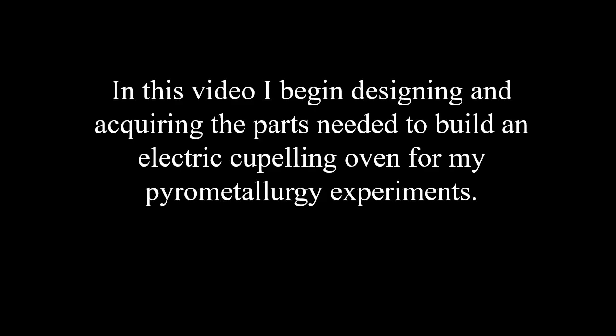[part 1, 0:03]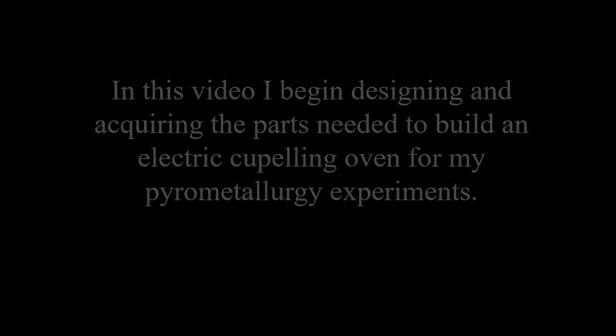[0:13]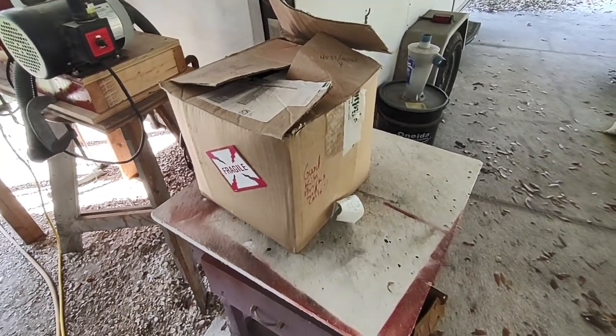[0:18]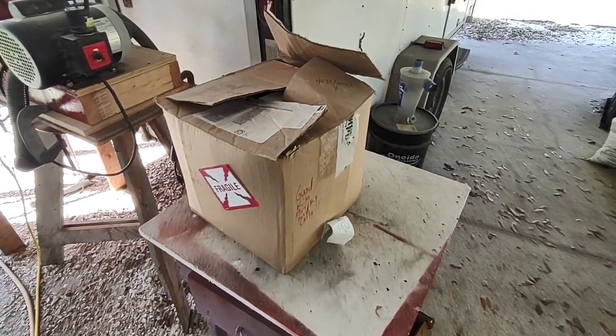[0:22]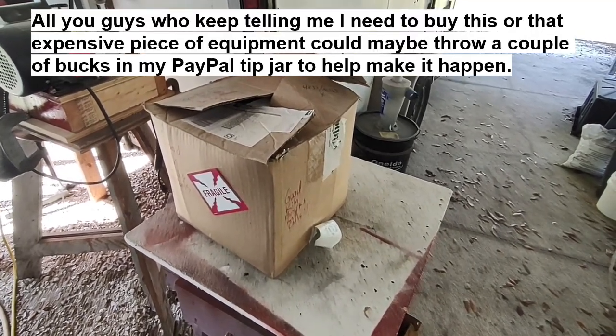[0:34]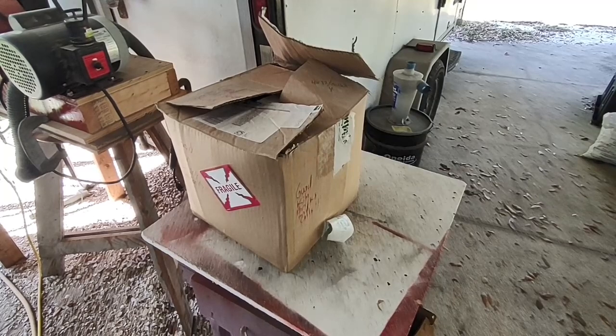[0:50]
Now, I've been doing some pyrometallurgy experiments and trying to do some cupelling over in my foundry furnace, and well, it's not ideal for that. It gets way too hot and there's not enough oxygen in there for cupelling. Everybody keeps telling me I need an electric furnace for this. Okay. Everybody keeps telling me that, but I don't think they're looking at the price tag on those things, especially these days post, you know, inflation explosion. They're pretty darn pricey.
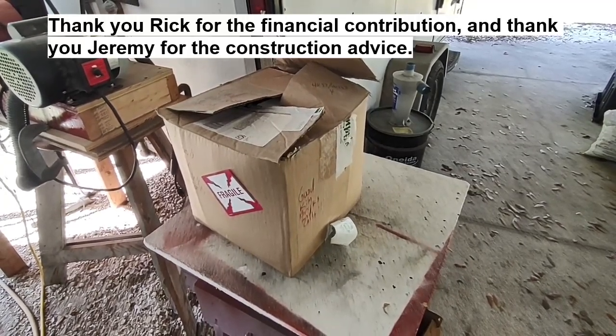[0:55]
So, well, I'm saving my nickels and dimes, and one or two of you have contributed toward the possibility of me getting one. Rick, I'm looking at you. Thank you very much, buddy. But I'm also looking at the possibility of building one. So, yeah, that's a possibility, too.
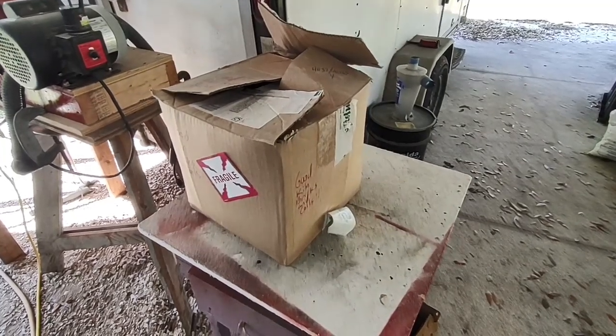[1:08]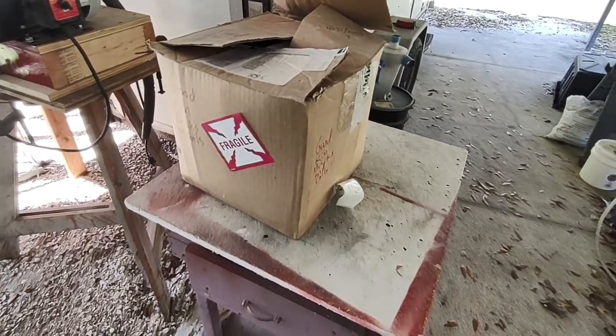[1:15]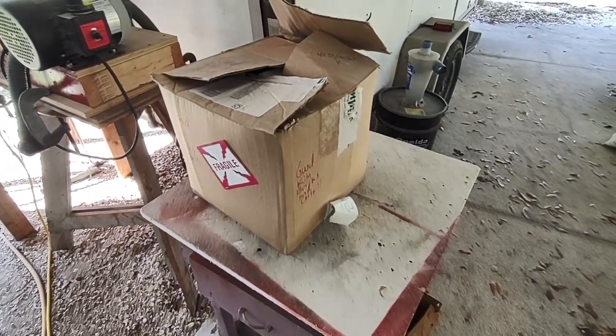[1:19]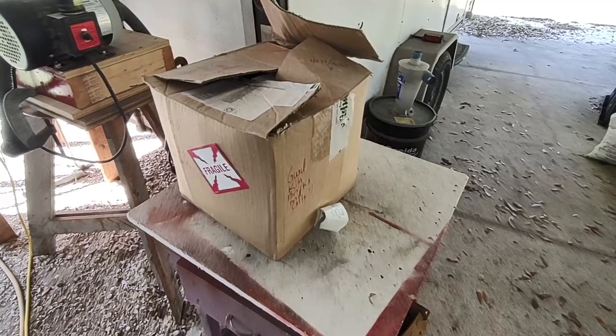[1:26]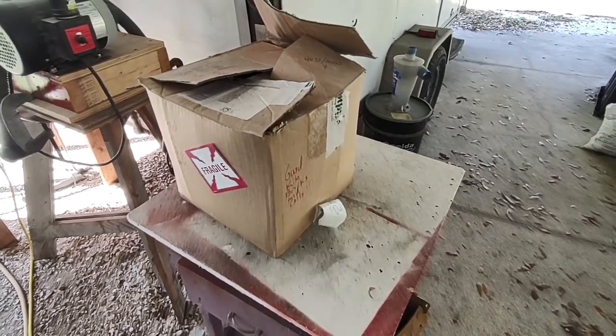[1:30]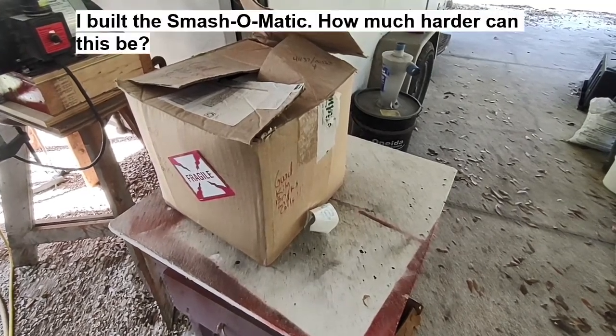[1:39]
So I'm looking at all the junk I've collected. You know, I've got kilns out back I use for various things, and I've got a lot of kiln bricks, good kiln bricks here in this box. And I'm wondering if I could build my own furnace using kiln parts and some other stuff I've got laying around. So I think that's what I'm going to try and do. It doesn't look that difficult, really. I've looked at a couple of home-built furnaces online, and I think I can do it.
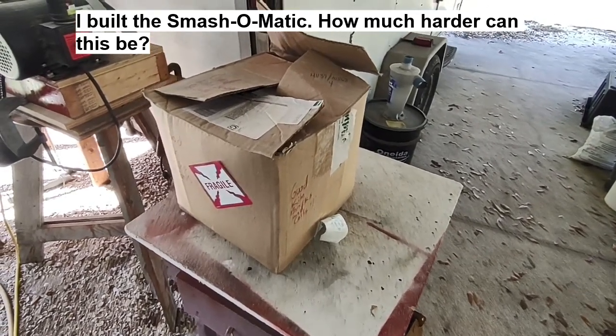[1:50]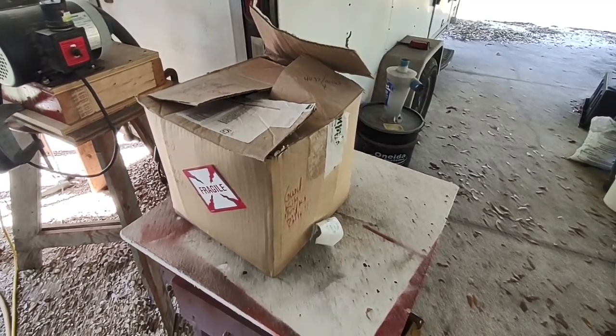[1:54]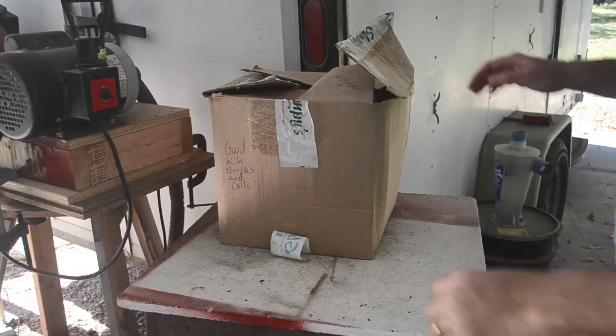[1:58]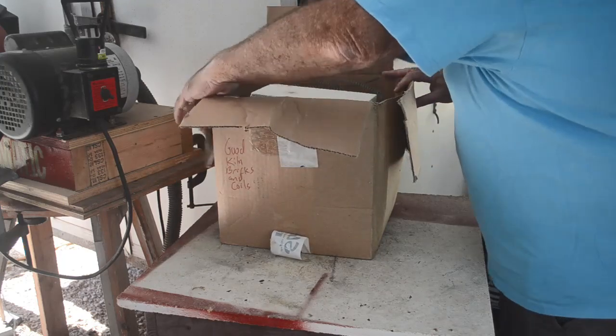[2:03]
So let me start unpacking this box, and we'll see if I've got some of the parts I need. I'm sure I'm going to have to order a bunch, but I'm betting the price tag is going to come in way below buying a newer used furnace. So let me get to unpacking. So let's just see what we've got in this box here. It's been in storage for a while. Haven't had to do any kiln repairs for a while.
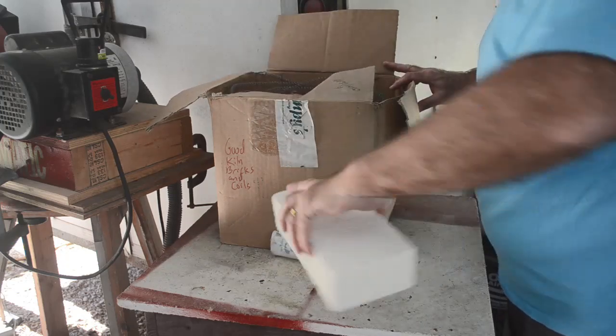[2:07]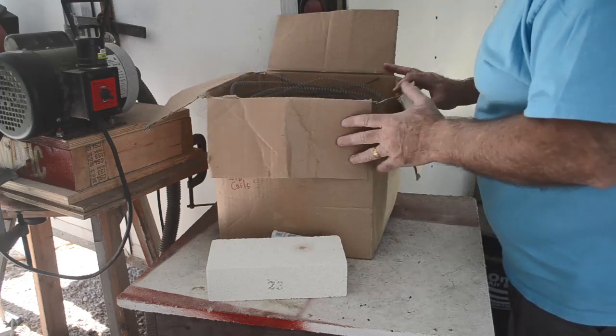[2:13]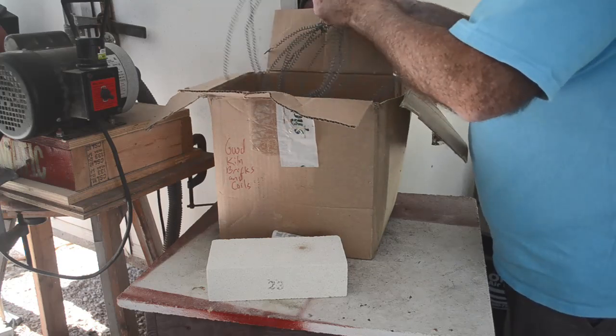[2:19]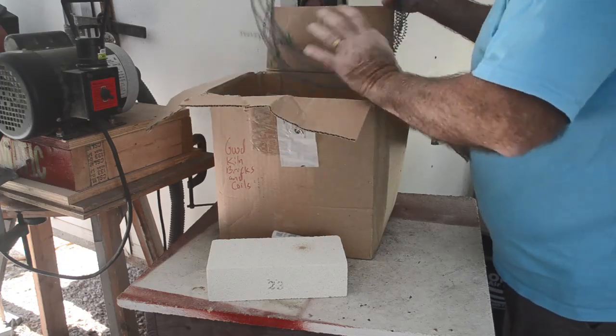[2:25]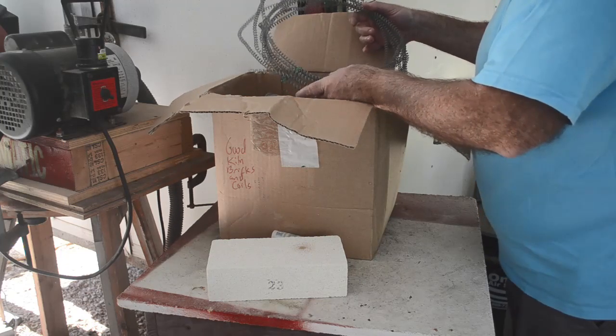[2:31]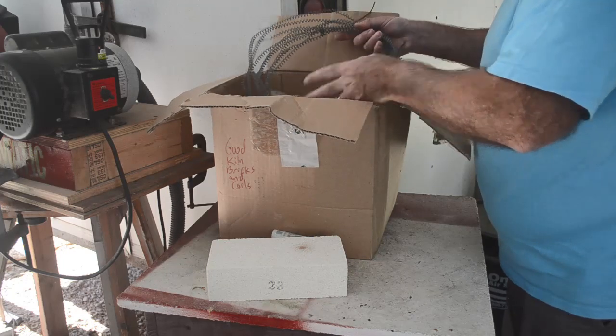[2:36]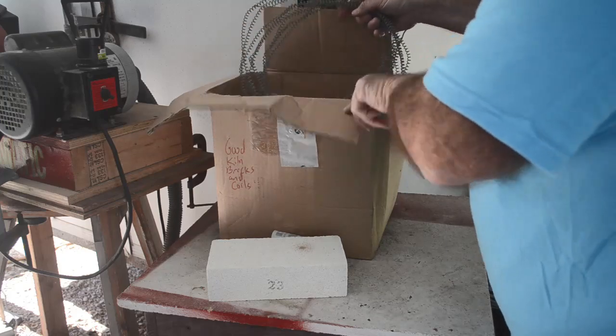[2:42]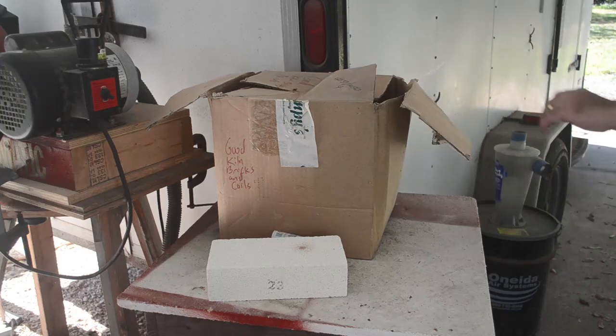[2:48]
Here's a K23 kiln brick, and I know I have another box with some of these in it. I must have put this one in here just because it didn't fit in the other box. Here is a couple of spare coils for my kilns. Now these I think are going to be too big, much too long. And these are for 220 volts as well. I want to build a furnace that's going to run off 120 volts, so I will probably need to wind my own coils, I think, rather than try and reuse these. Set them aside over there.
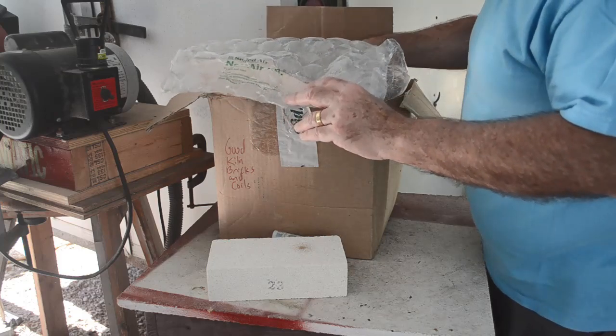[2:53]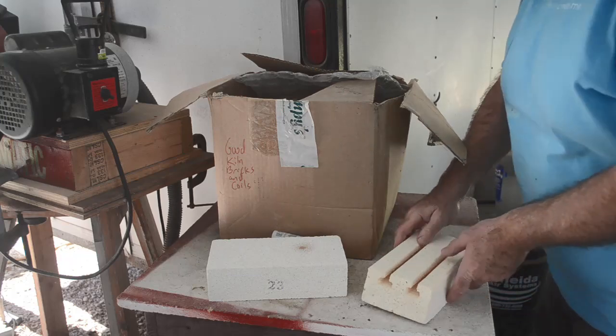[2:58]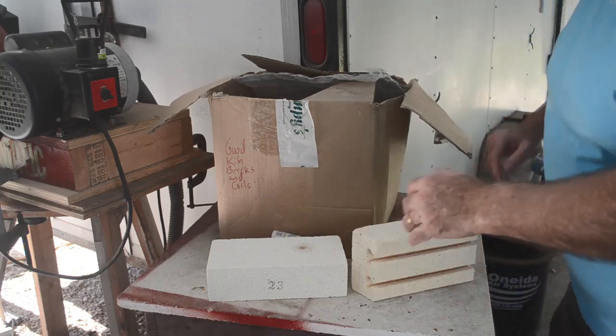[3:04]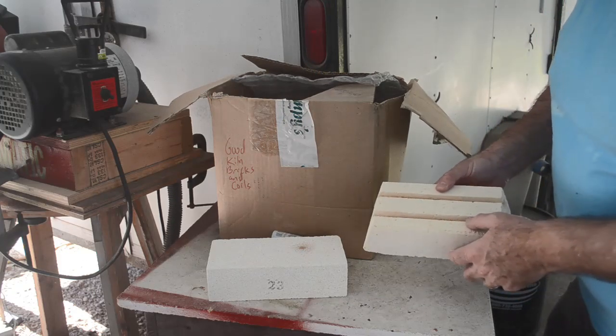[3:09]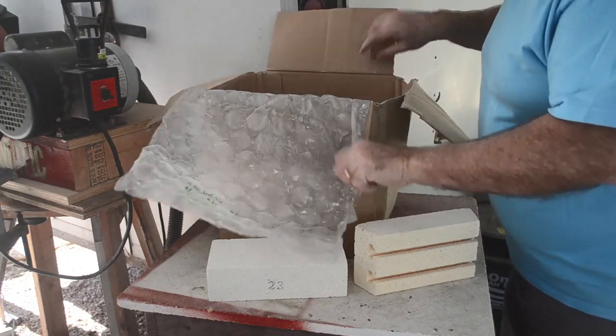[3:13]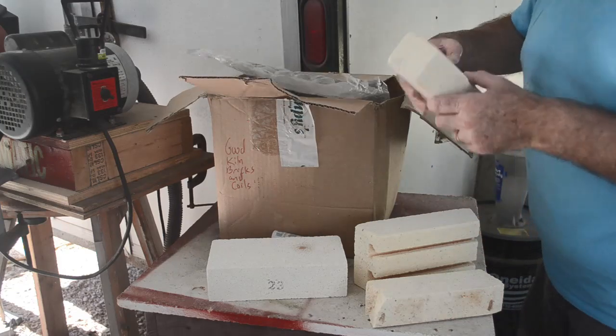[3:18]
Yeah, these are the kind of bricks I was thinking I had. These are for like octagonal or 10 or 12 sided kilns. They got sort of a bevel on the ends, but they've got channels for coils in them. So yeah, I got quite a few of those in there. I've got some of these. They're kind of broken, but I think I can cut them and glue them together or mortar them together.
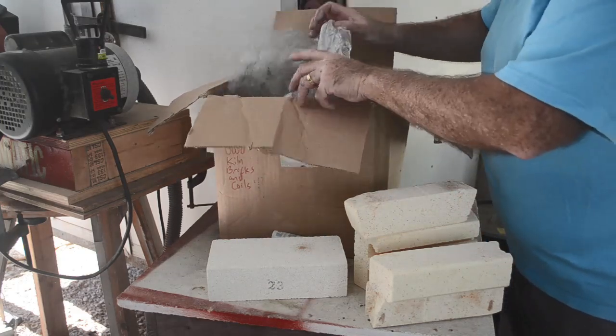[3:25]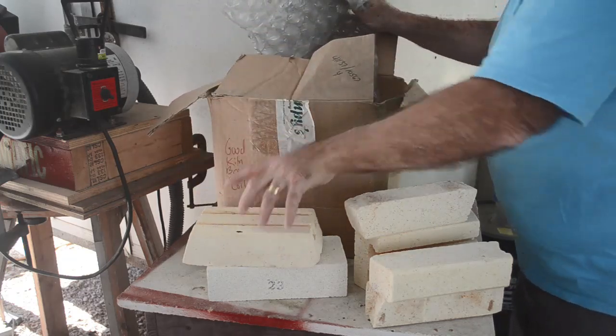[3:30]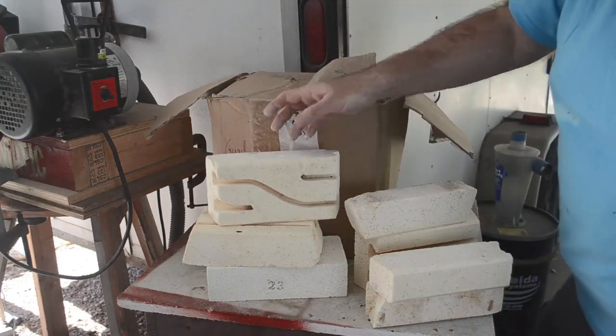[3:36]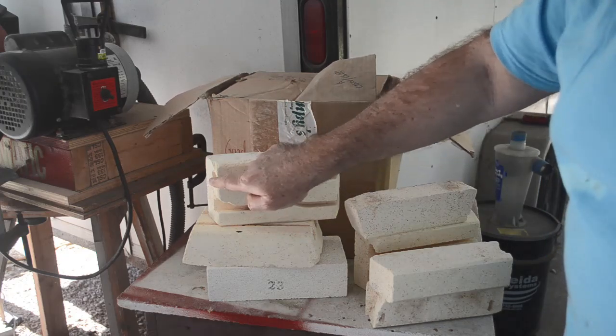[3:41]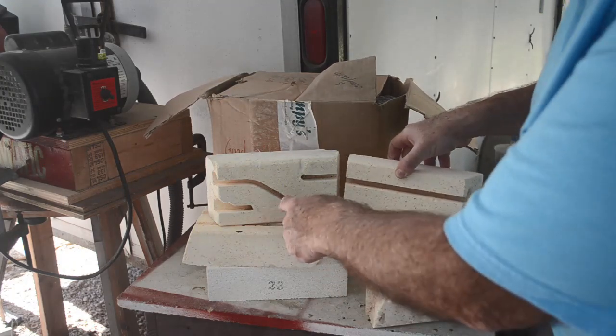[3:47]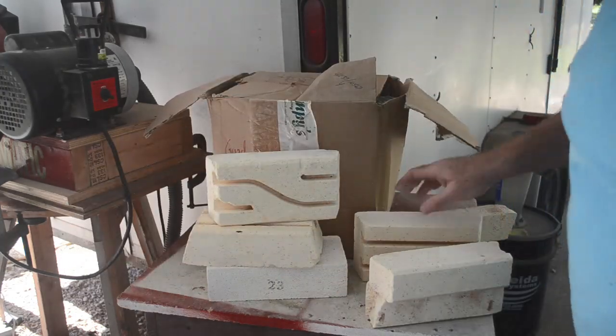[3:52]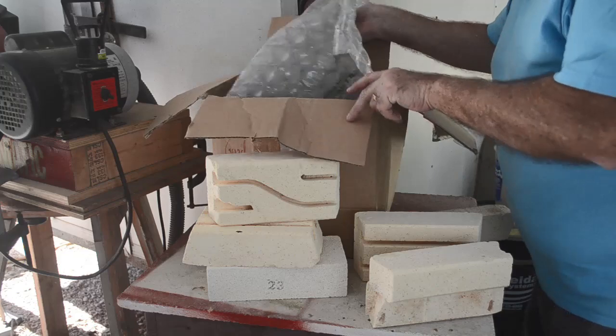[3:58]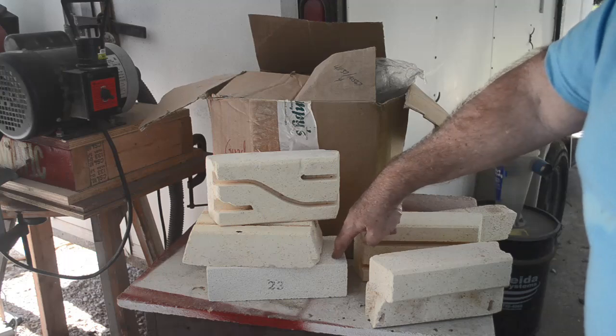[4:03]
Oh yeah, here's another one of these. Oh, here. There's a crossover brick where the ends of the coils go through here and then they would come and cross over. So you'd have something like that. Coil would come around, back up, and you'd have something like that on this side. Yeah, I think I can make something out of this stuff. I think I've got enough kiln bricks. Yeah, there's quite a few more down in here. And I know I've got some more of these.
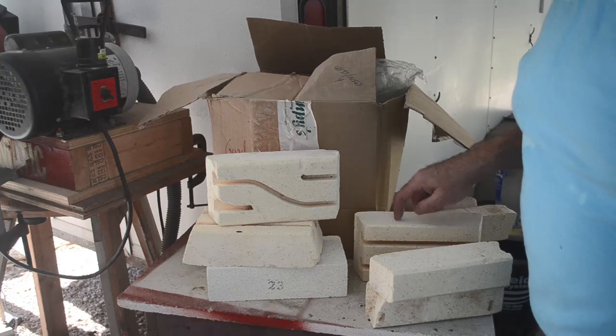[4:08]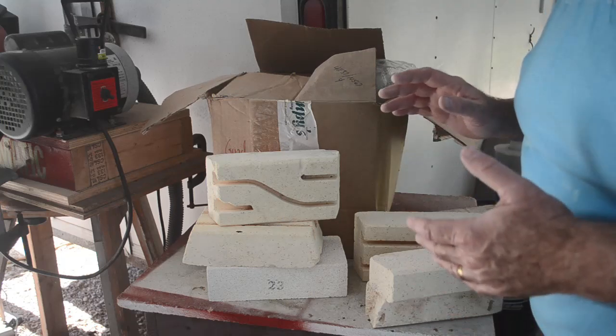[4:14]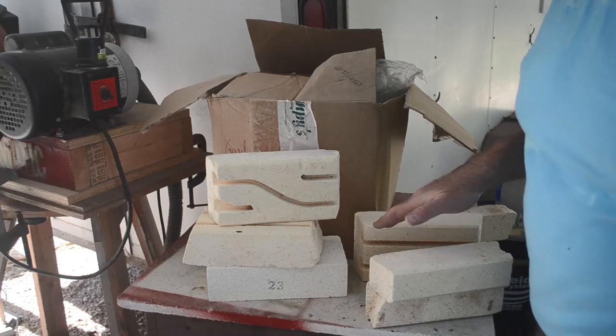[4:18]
So yeah, the only thing I'm a little worried about is these things are all very, very soft and fragile, and they kind of dissolve if anything molten falls on them. So I may need to buy some tougher bricks for the base of the thing. But I think for the sides and the top, I've got bricks that'll work. I think so. So I'm going to have to get bricks for the bottom.
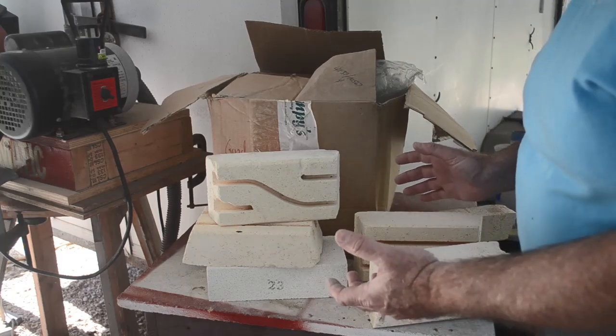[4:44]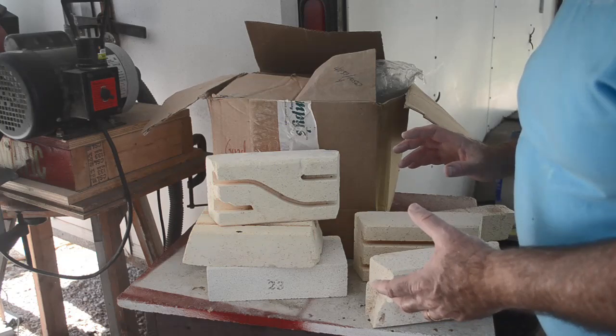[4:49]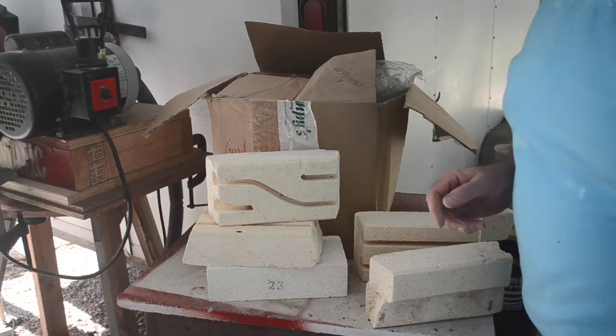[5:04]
I'm going to have to get some wire, some resistance wire I can wind into coils. I'm going to have to build a coiling jig. And I'm going to have to buy some stuff to hold it all together, like maybe some angle. Some slotted angle would be better. I'm going to need a temperature controller, a thermocouple, and probably a solid state relay for turning the coils on and off.
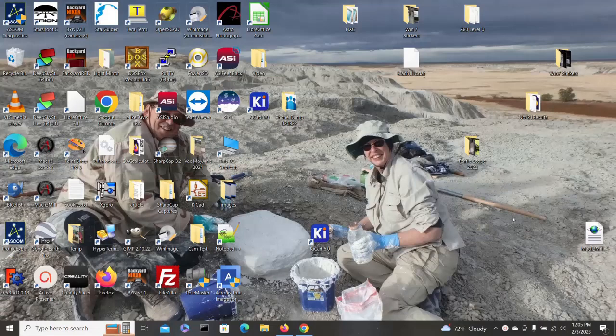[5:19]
So yeah, I guess I need to go shopping, but I think I've got most of the structure here in all my kiln bricks. So, and my K23 bricks. So I think I'm good. Okay, let me go shopping for the other stuff I need. Well, I guess it's time to go shopping.
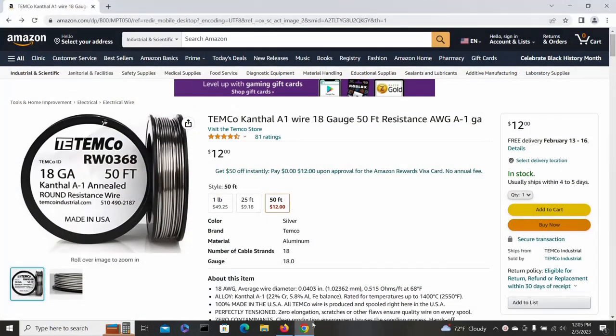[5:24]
So I'm on Amazon here. Here's the resistance wire that Jeremy recommended. So I'll get 50 feet of that. Okay. And let's see, what else do I need?
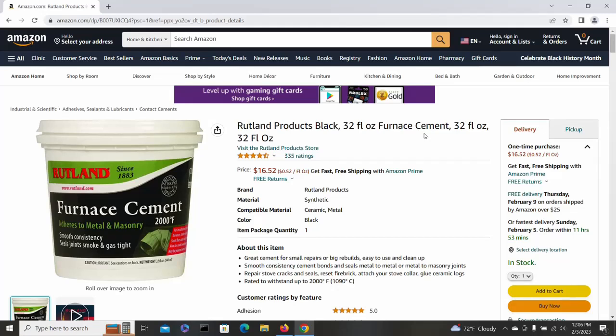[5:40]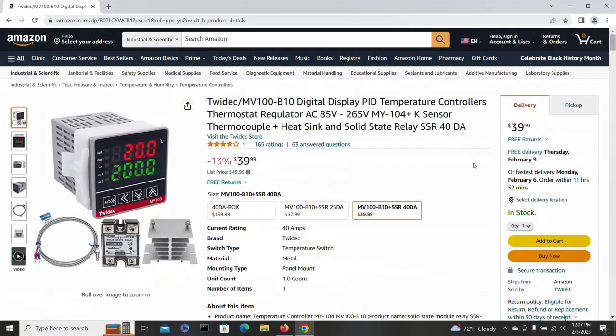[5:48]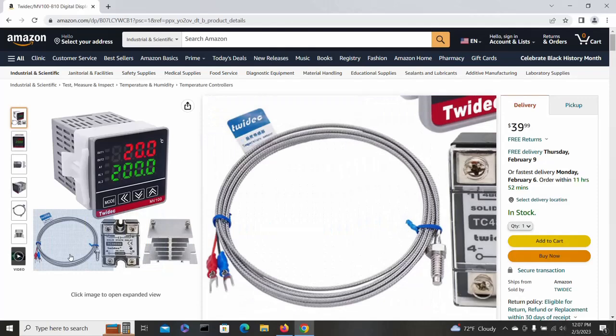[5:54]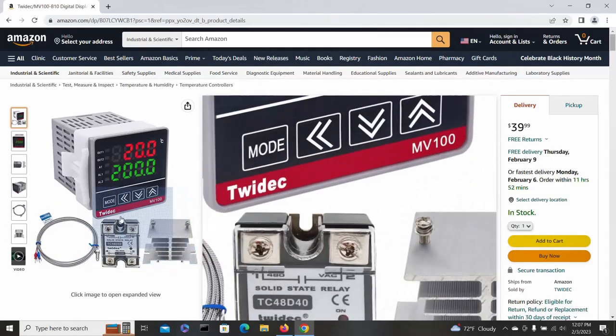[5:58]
Okay, here's some furnace cement. I've used this brand before and it works pretty well. So I will get a tub of this stuff. So here's the temperature controller that Jeremy recommended. It comes with a thermocouple and a solid state relay and a heat sink for the solid state relay. So I will get this.
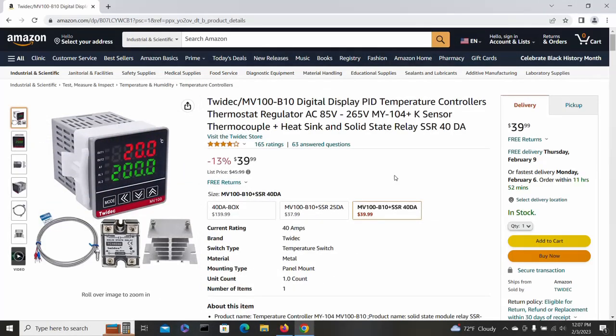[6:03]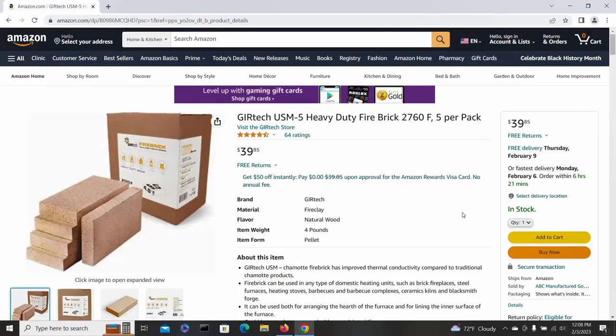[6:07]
What else do I need? Okay, I don't have quite enough fire brick to build this thing, so I'm going to get some of these. These should be good for the base. Most of the fire brick I'm going to use to build this is pretty soft, and I know the base is going to take the brunt of the abuse, so these are going to be much harder, firmer bricks, so I'll use these for the base of the furnace.
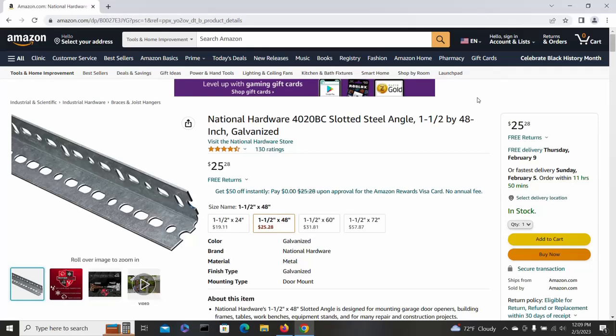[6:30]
And here's some slotted angle. I can use this for the legs of the furnace. I can use it up the corners, around the corners of it, underneath it for support. So yeah, this stuff's pretty handy for building a skeletal framework around the furnace to hold it all together and take the abuse that I don't want the soft bricks to have to take when it gets moved around and put into storage and stuff. So I will get 3 or 4 of these, and I have to think about anything else I might need. I'll probably have to go shopping again in the future, but this is a good start right here.
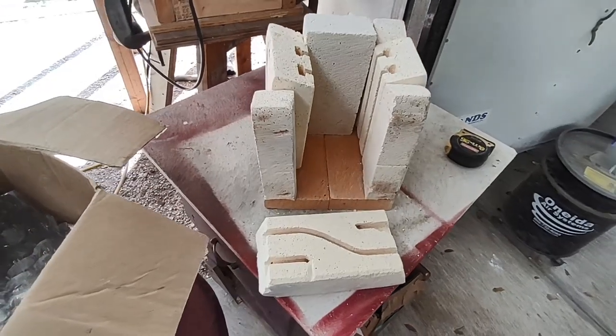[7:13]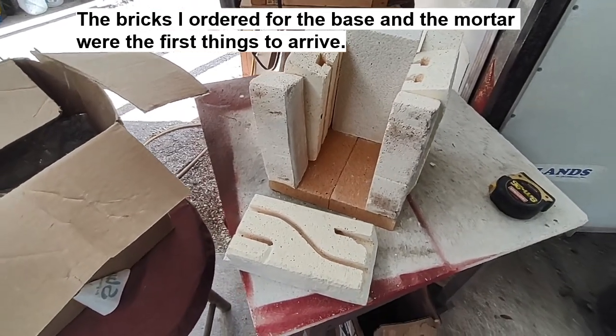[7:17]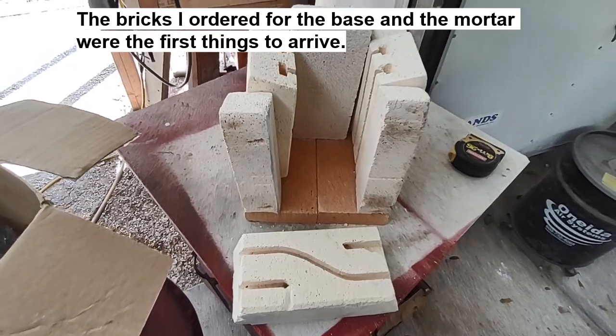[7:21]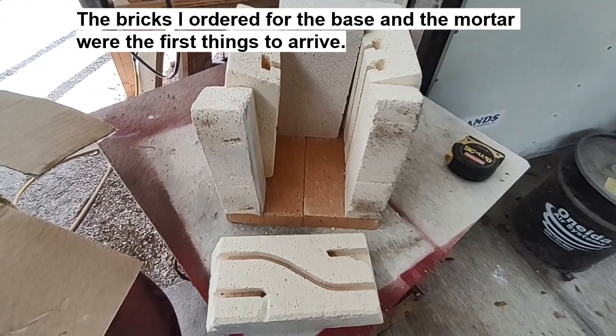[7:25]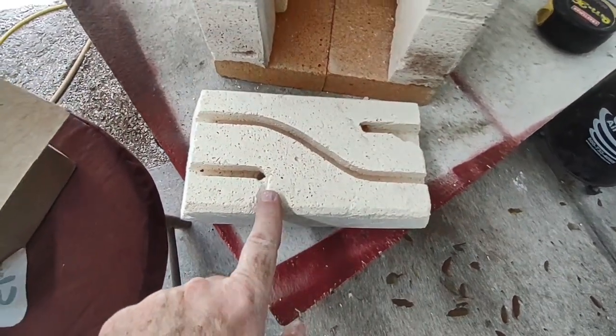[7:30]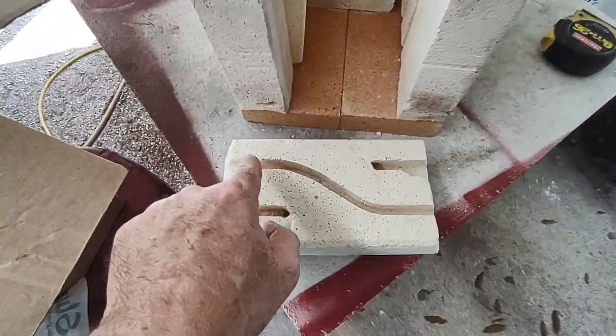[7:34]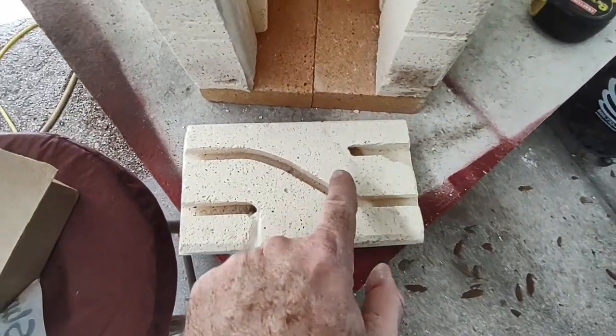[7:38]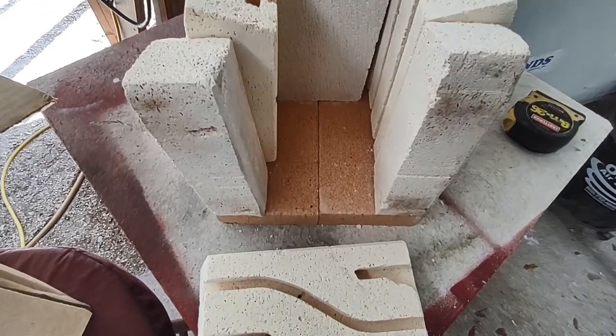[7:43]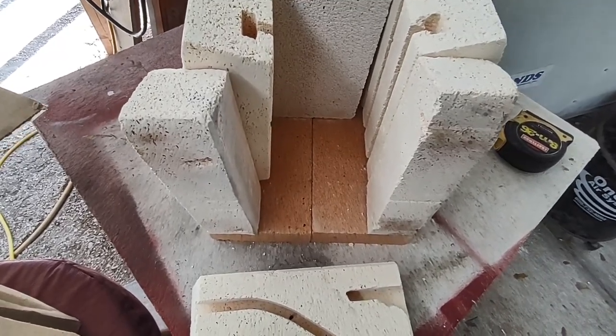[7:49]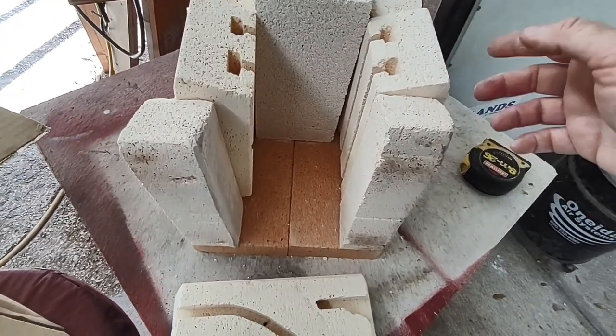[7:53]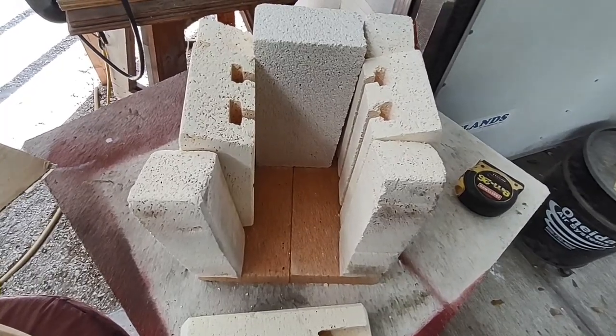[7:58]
What we have here is sort of a mock-up or early engineering study of a potential cupelling oven I'm going to build. I've started putting some ideas together. This one would be on top, and the coil would come in, go down one side, back up, across, down the other side, back up, and then out. And it's not going to have a very large capacity, of course, but it doesn't really need to. And of course, I've got these things stacked vertical. It might be better to do them horizontal, so that's a possibility too.
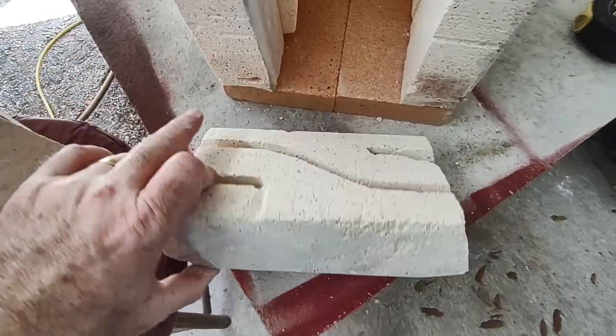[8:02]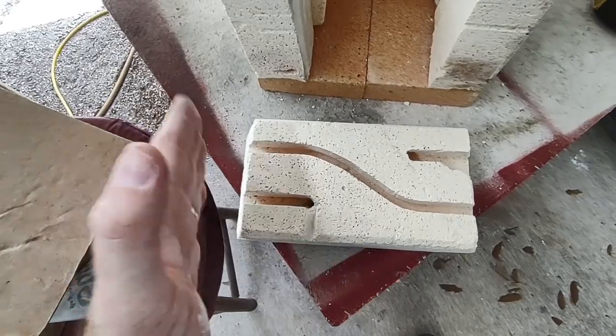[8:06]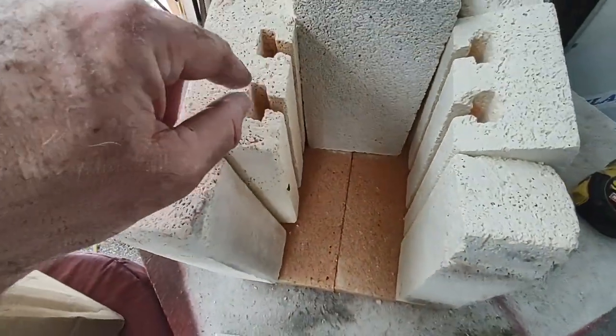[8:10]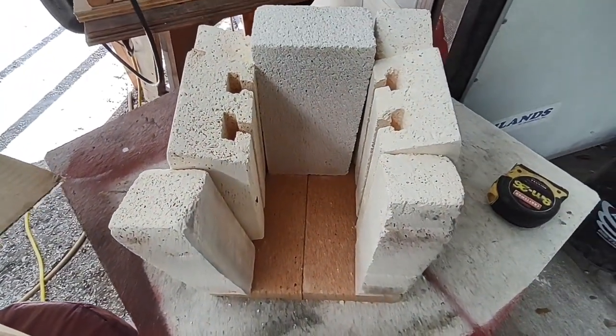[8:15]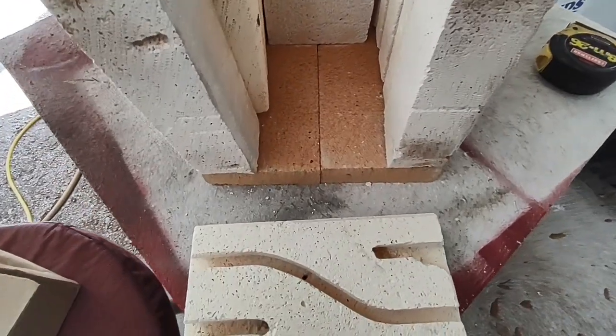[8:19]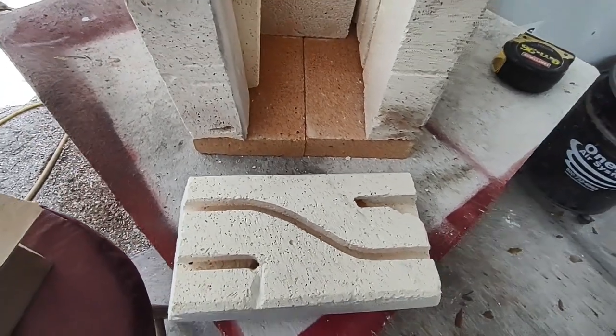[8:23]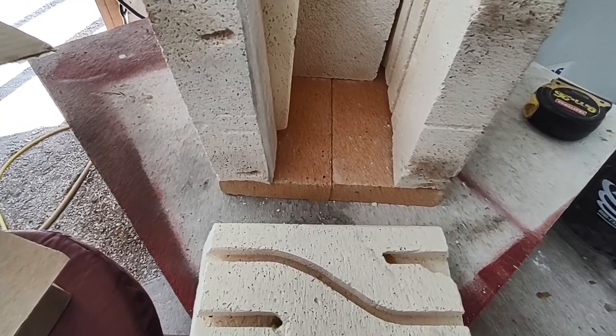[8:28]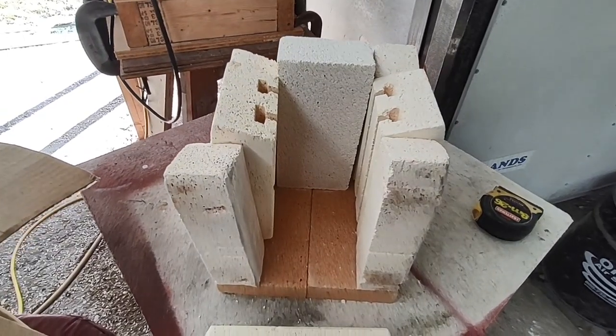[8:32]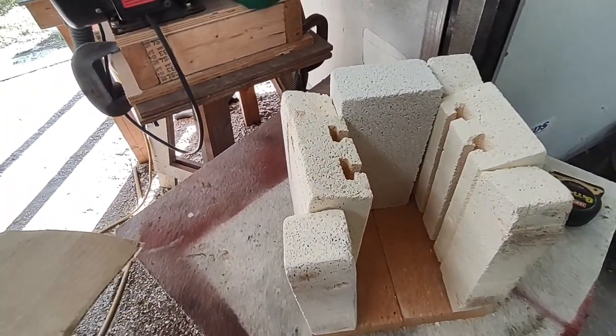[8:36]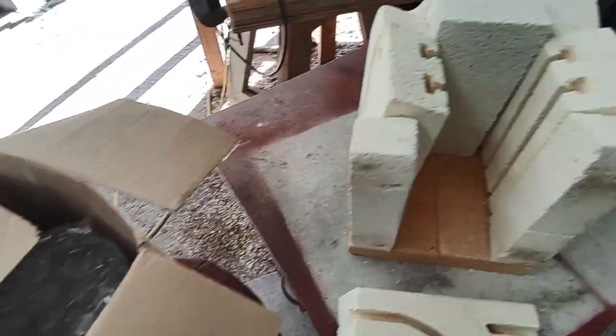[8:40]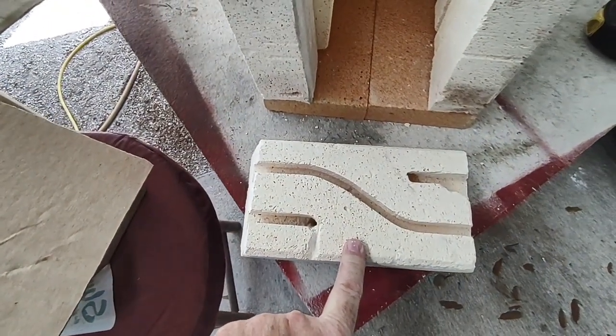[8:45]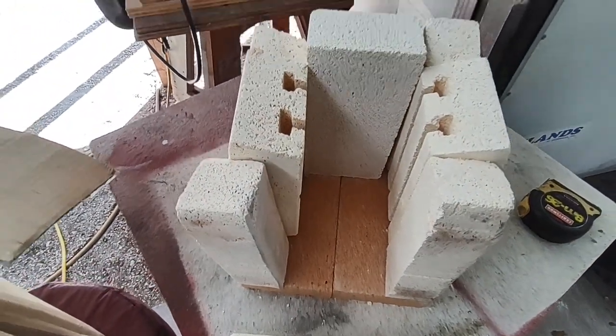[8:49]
And these bricks, they're beveled for use in like a 10 or 12 sided kiln. I'm going to have to cut them off square and knock out some of the webbing here so that the coil can cross over. But that's not really a problem. I've got some cement for cementing it all together. I might double up the layers on the bottom. I've got some thin fire bricks on the bottom. I might double up the layer there just for better insulation. I probably got enough bricks, besides this one on top. I'll need some others, skinny ones like these.
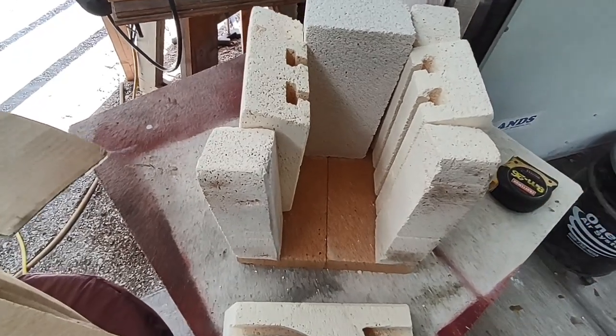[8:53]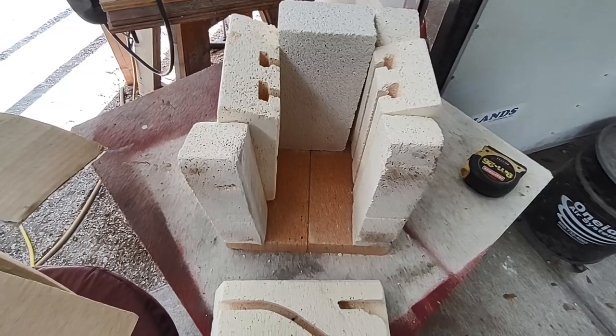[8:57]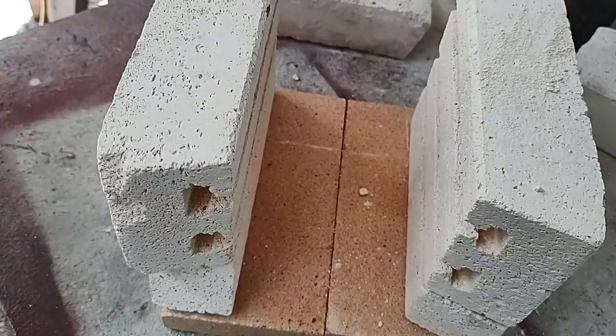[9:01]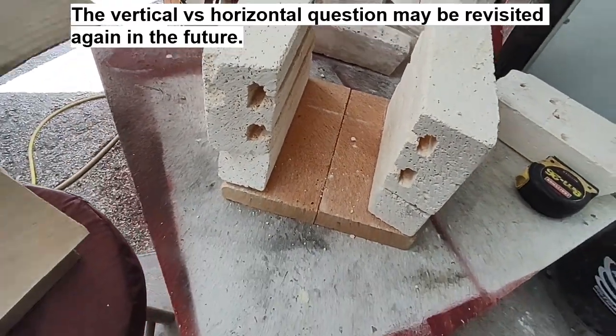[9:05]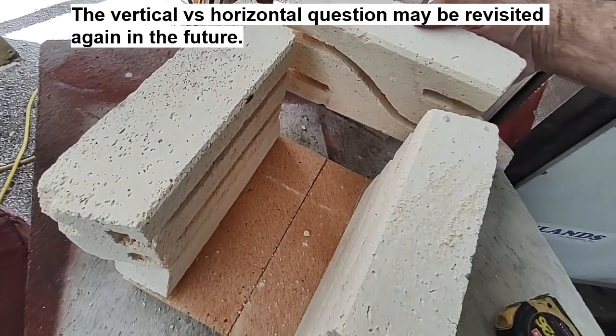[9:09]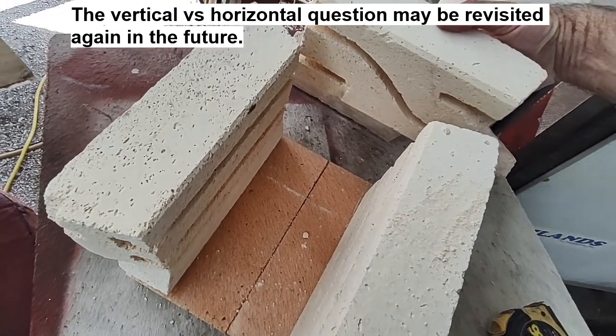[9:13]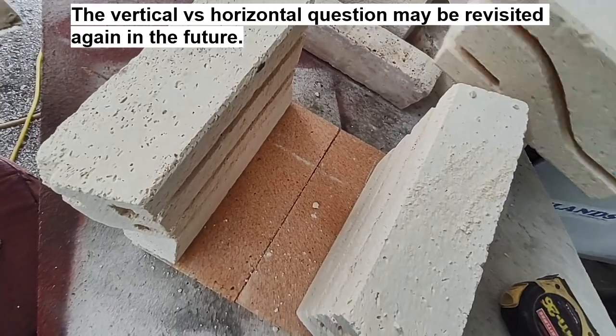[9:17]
So, let me rearrange this and see how it looks with the coils horizontal. That might actually work better. That would get the heat closer to the sample, which would be sitting here. So let me try that. Yeah, I'm not sure about going horizontal. I'm going to have to cut a lot off of this one brick here. And things don't fit together quite as well. So I'm thinking vertical is probably better.
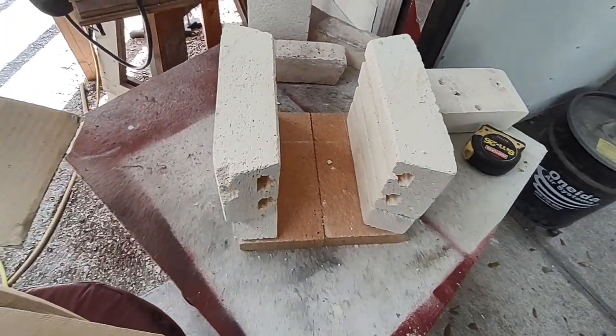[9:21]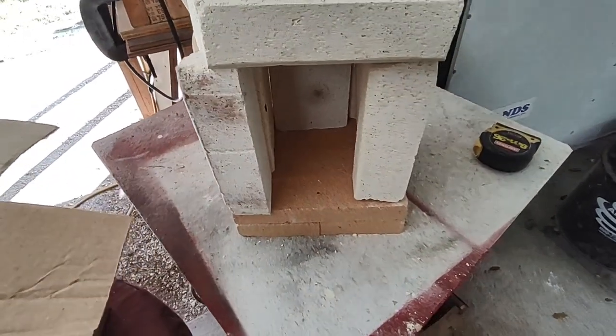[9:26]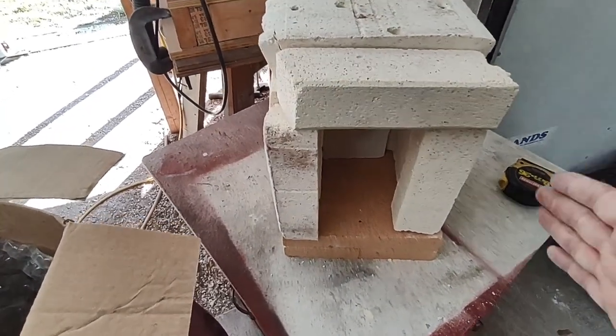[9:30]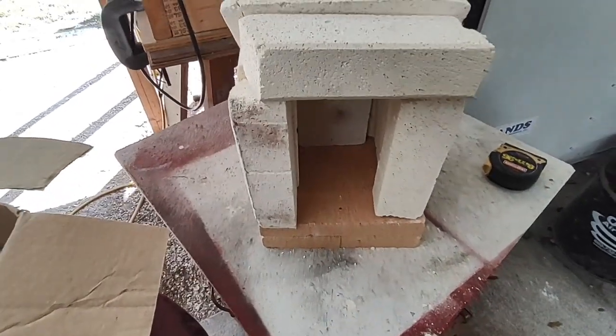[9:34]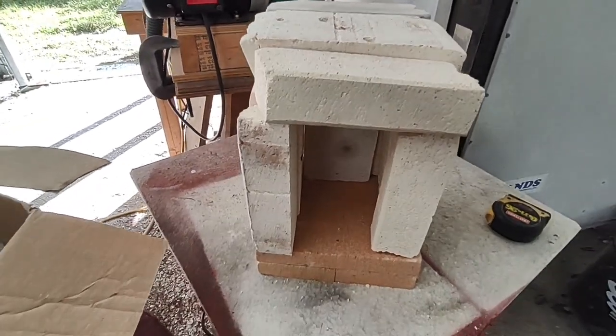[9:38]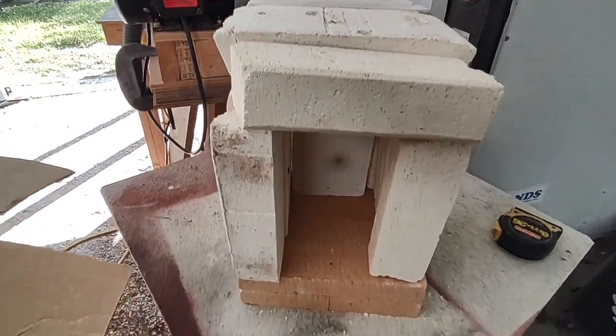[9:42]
All right. Let me look at that again. Okay, yeah, I like the vertical better. Everything fits together a little better in the vertical orientation. Of course, I'll cut everything nice and square and cement it all together nice and flush. It's just all rough fit together now with rough beveled blocks. Doubled up the base. Yeah, I think this is going to work.
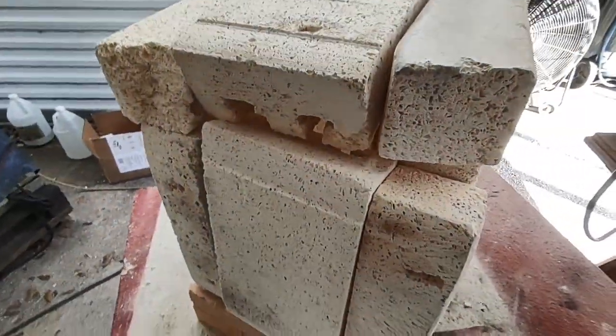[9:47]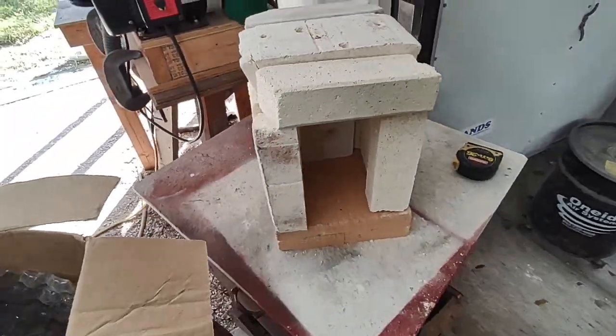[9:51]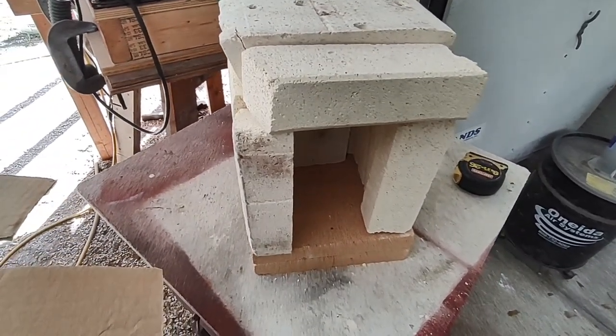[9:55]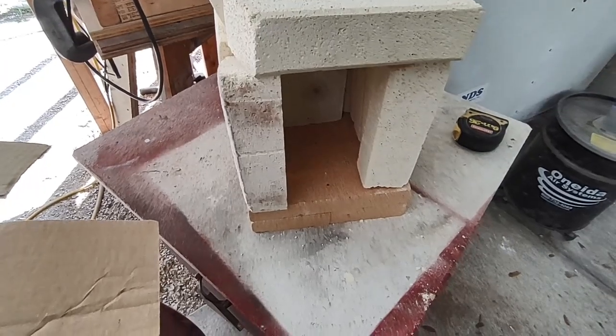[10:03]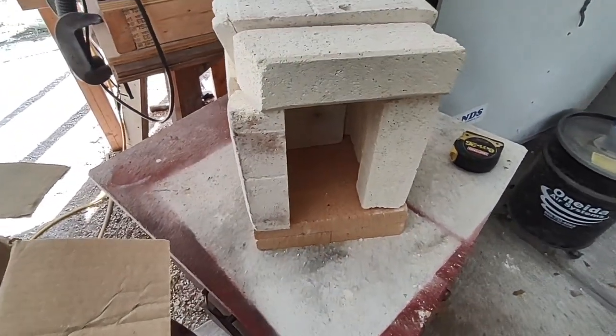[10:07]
All right. So I will need to cut the blocks to fit and then cement them all together. I'm going to build a base to sit this on. It's going to be elevated up off of whatever surface it's on, because this will probably get quite hot on the bottom eventually if they're running for a while.
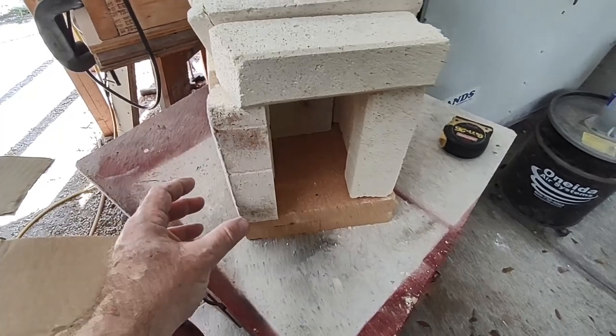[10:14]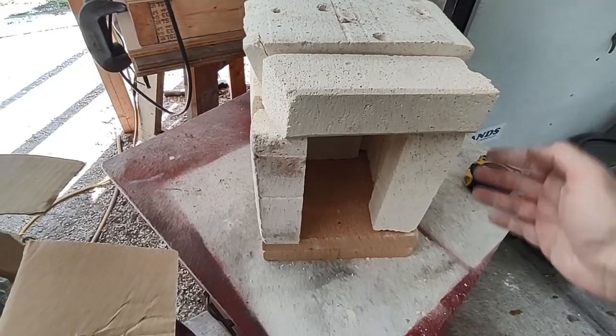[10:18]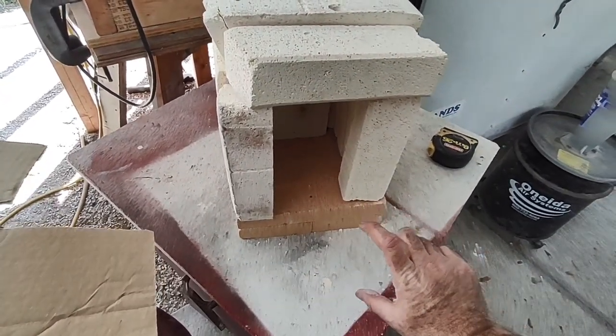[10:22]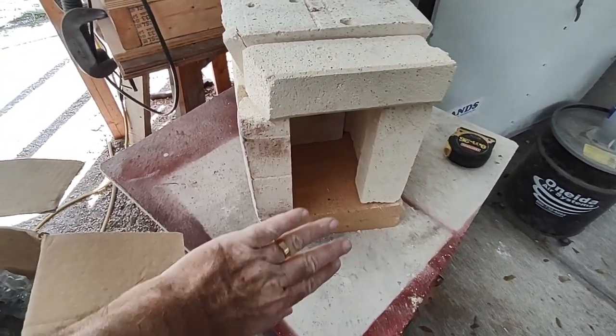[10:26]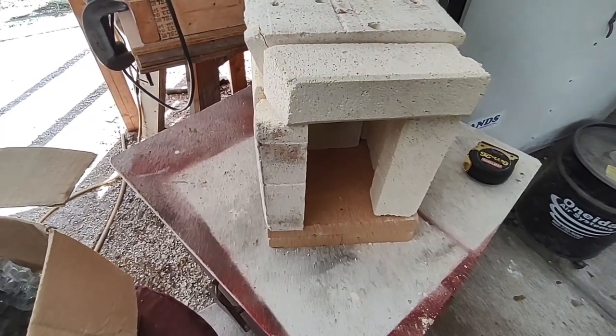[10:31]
I think what I'm going to do is build an angle iron frame all around it with legs down and give it at least like 4 inches off of whatever it's sitting on. I need to figure out how I'm going to make a door for on the front of it. I've got some ideas in that department.
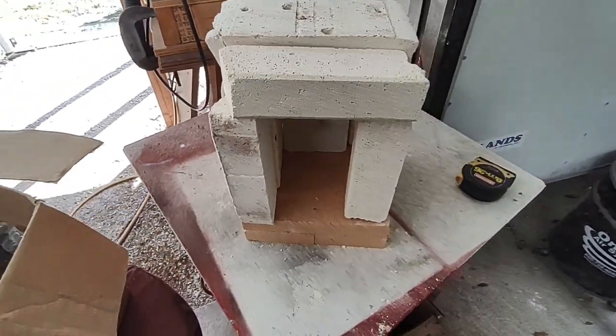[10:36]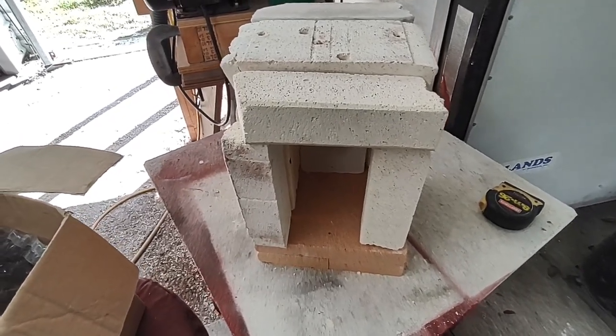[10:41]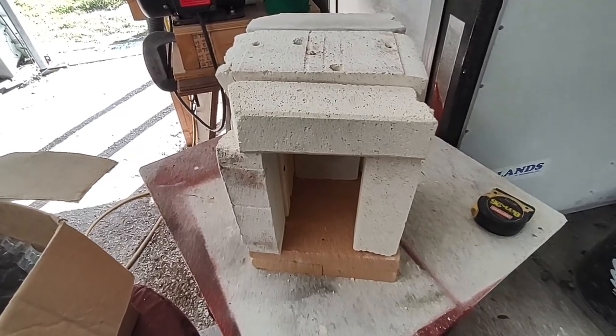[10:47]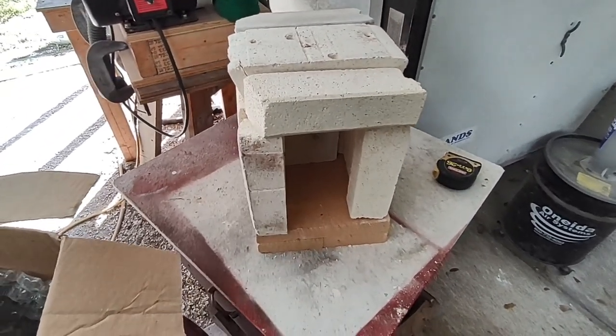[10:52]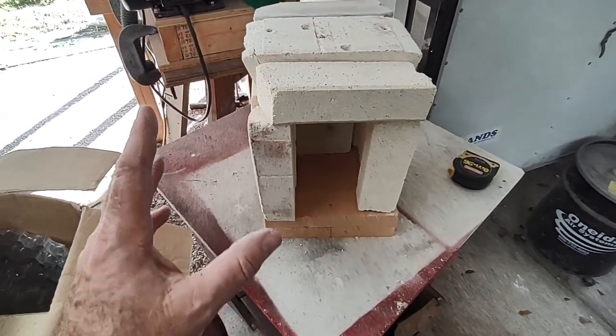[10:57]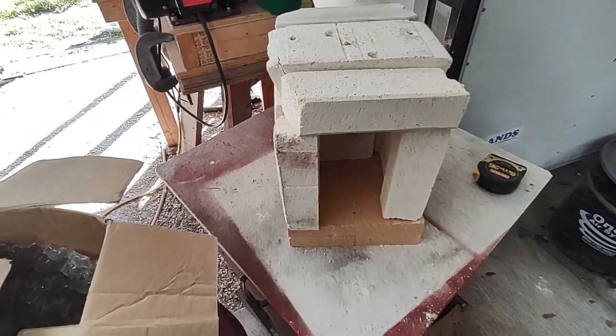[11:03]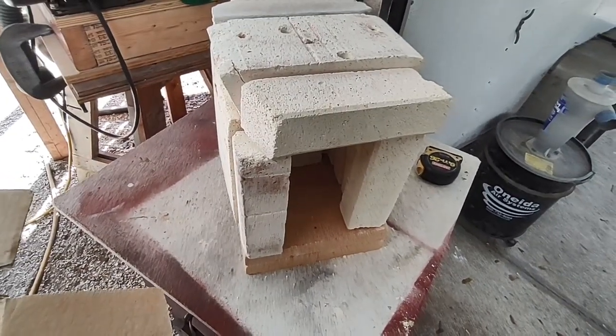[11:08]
So, all right, I think I can build my own cupelling furnace. Everybody tells me I need an electric cupelling furnace, okay? Most people don't realize how expensive they are when they're telling me that. A few people do. And one person, Rick Brock, has actually donated towards the project. So I think he's earned the naming rights for this oven once it's done. It'll be the Rick Brock Memorial Cupelling Furnace or something like that, unless he comes up with a better name for it. We'll go with his name if he comes up with a better one. I'll start cutting the blocks and putting this thing all together and see what I can make here.
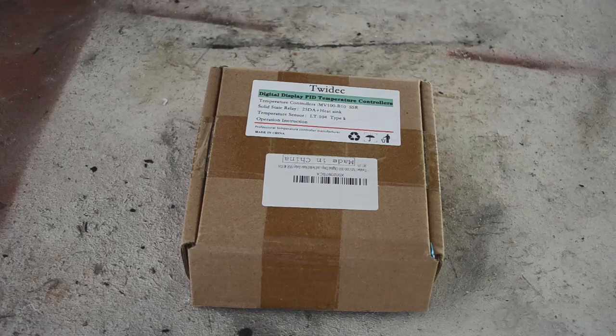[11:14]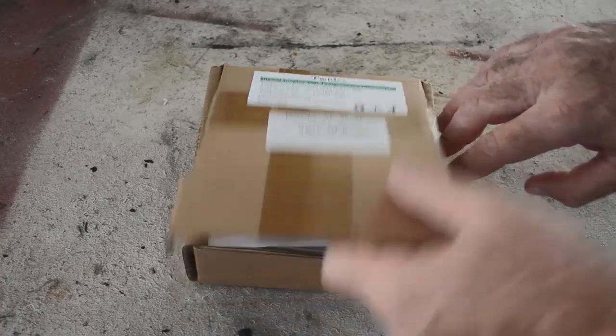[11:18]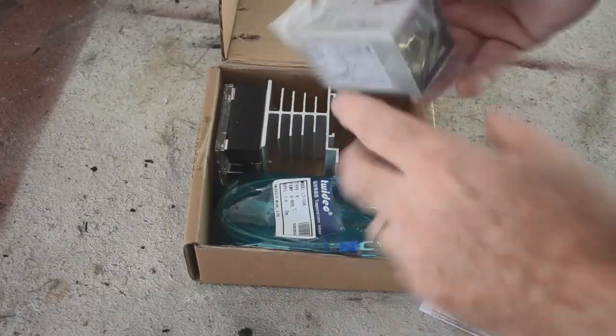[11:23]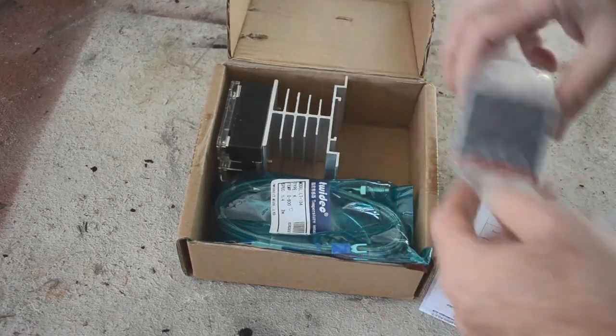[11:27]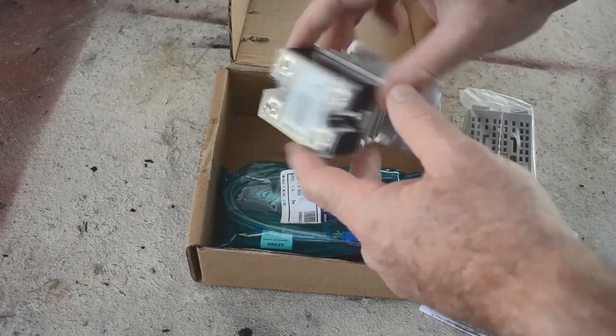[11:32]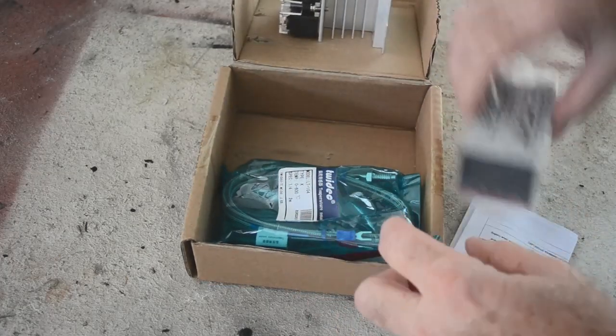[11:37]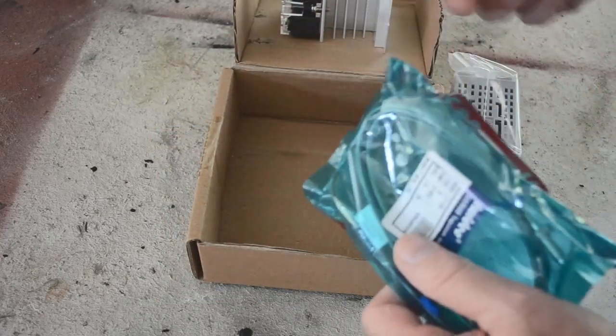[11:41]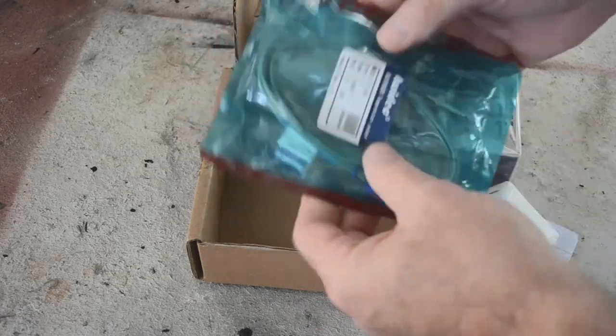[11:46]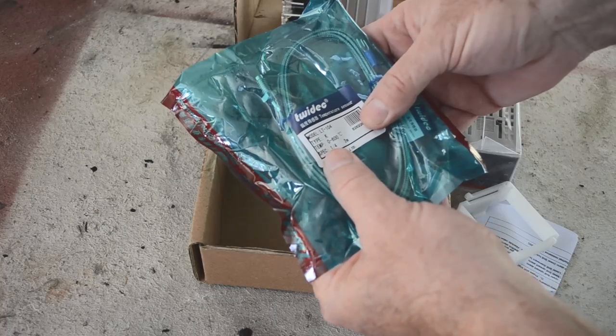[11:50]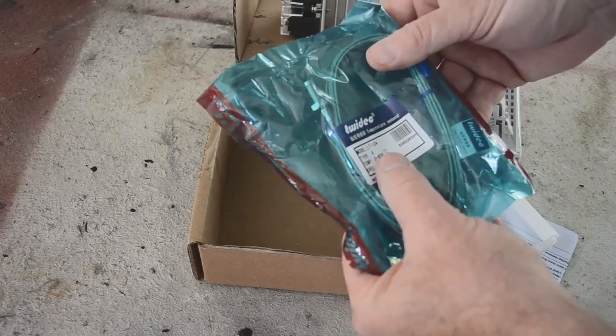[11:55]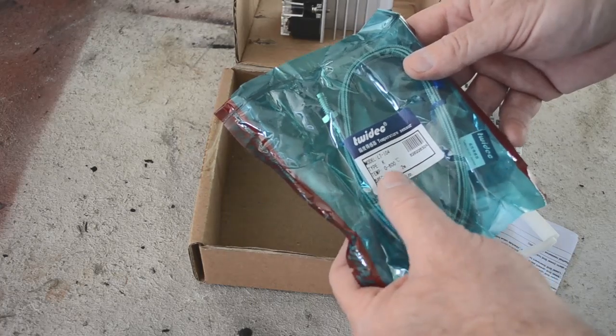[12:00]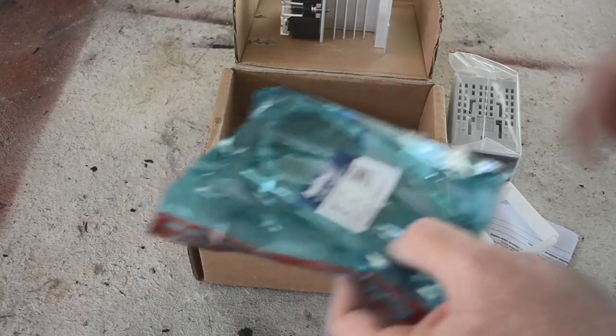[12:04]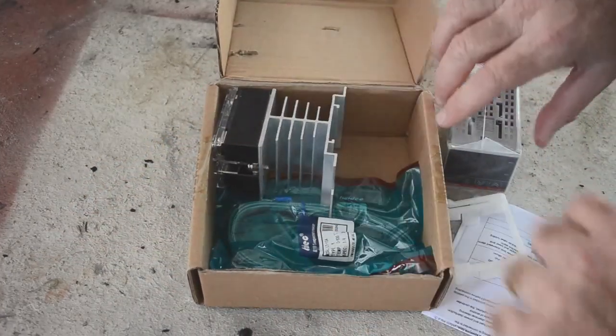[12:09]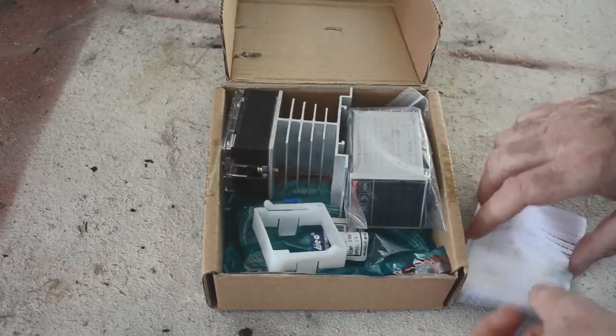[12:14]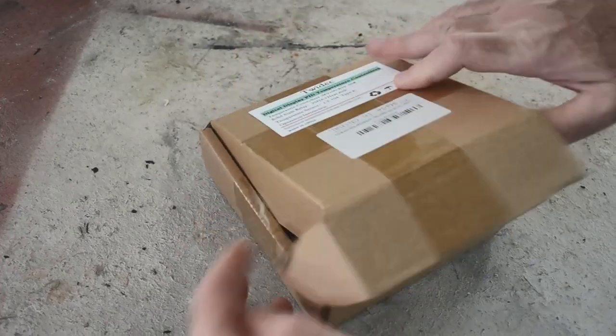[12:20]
Oh look, the Amazon man has brought some more parts for the furnace. Let's see what we got here. This is the temperature controller right here. That's the solid state relay that's going to turn the heating element on and off under the control of the temperature controller. That's a mounting bracket for the controller. That's a thermocouple, up to 600C. It's type K. I may replace this with one of my type K kiln thermocouples, which is good for a whole lot hotter than that, which we're going to need for the inside of the furnace I'm building. But okay, we got some parts arriving that we're going to need to get this thing operational. So that's good. Waiting on some other parts before I can do much else, though. But at least we are on the way.
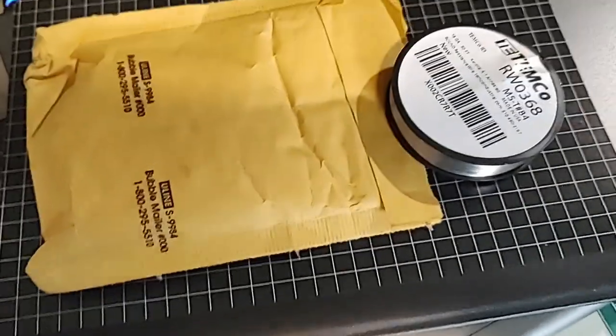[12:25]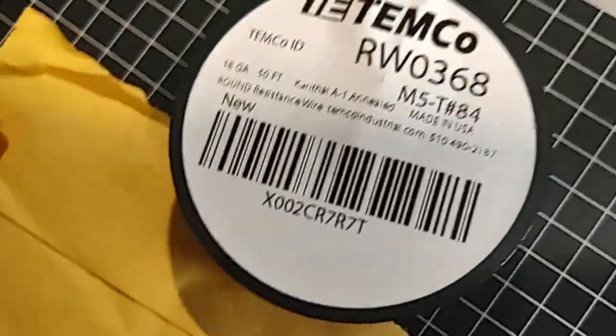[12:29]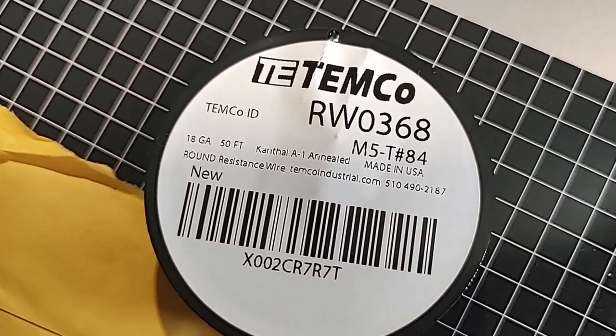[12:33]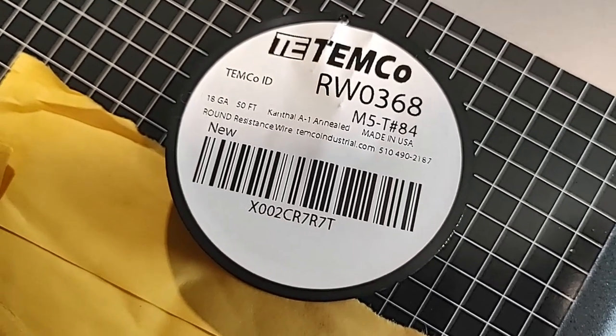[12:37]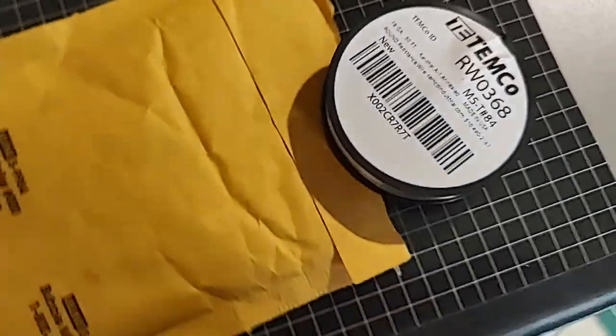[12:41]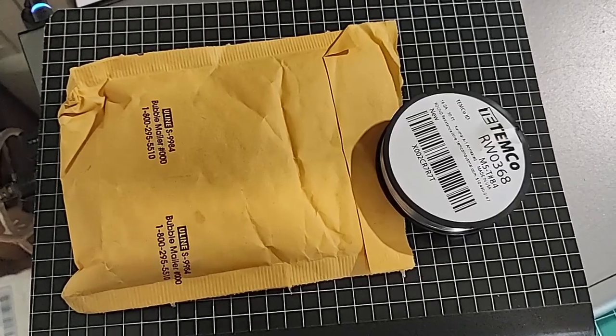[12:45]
Well, here's another piece of the puzzle just delivered. My resistance wire. Yeah. Kanthal A1 annealed. All right. So now I need to make a winding jig, a coil winding jig, so I can wind my coils. Doesn't look too difficult. I've seen some that other people have made. So I will get to work on that.
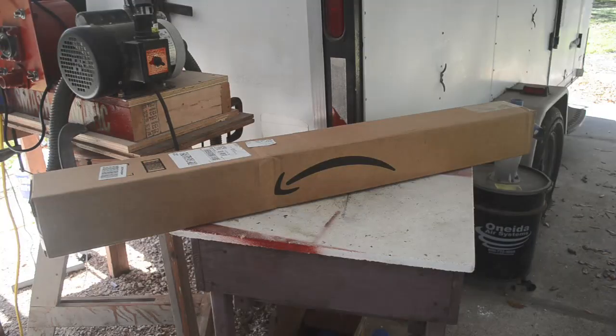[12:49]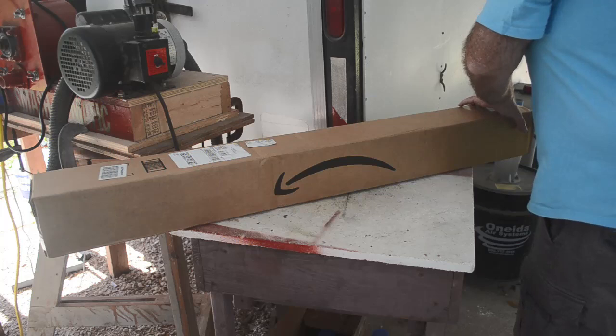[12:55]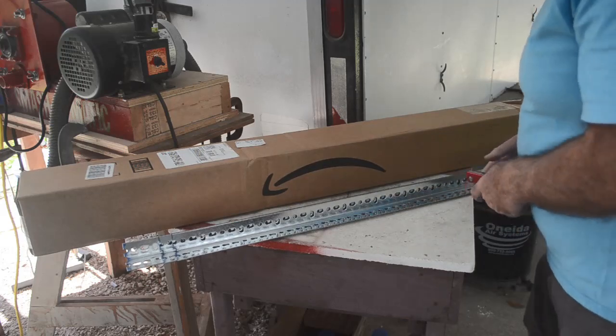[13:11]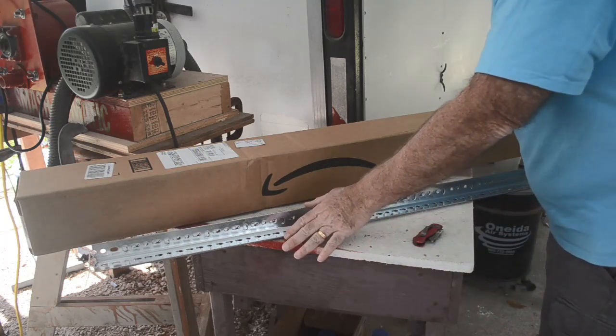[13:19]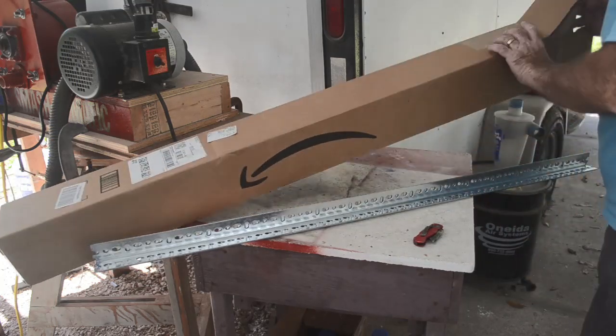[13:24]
Well, it looks like the Amazon man just delivered another piece of the puzzle here, this long box. Been waiting on this for quite a while. It was kind of lost in the mail for a while. I was afraid I was going to have to ask for a refund and reorder. But finally arrived. Here they are. Slotted angle. Perfect. Cut this up into the lengths I need and bolt it together or even weld it maybe. I don't know. I'll have to think about that. But here we go, 3 foot, 4 foot sections of slotted angle. And these should work good.
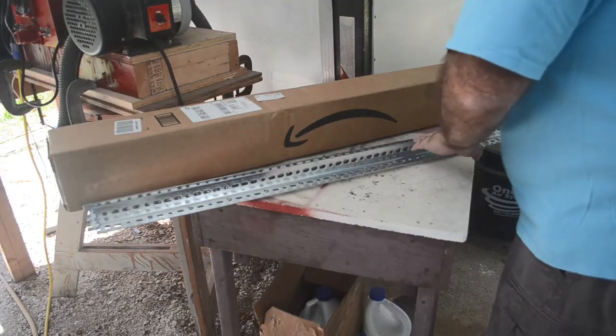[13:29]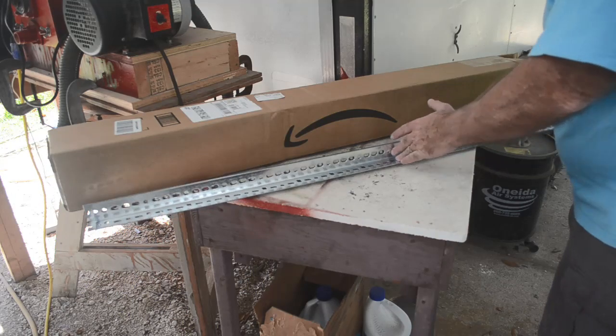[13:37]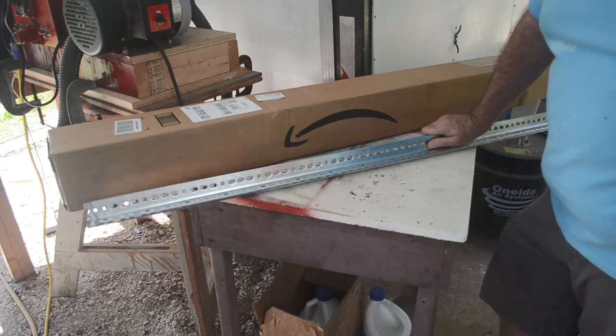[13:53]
I'll just cut probably about 16 inches long. The furnace will be about this tall. There'll be a little bit of leg underneath to hold it up off of whatever table I've got it on. Perfect. Just hold the corners together. I can cut smaller pieces to go around the top and bottom. Hold it all together. Perfect. All right. So I think I've got pretty much everything I need now to get started on building the furnace. So I guess I had better do that.
So I think that's a good place to end this video, and we'll pick up in part two when I actually start construction of the thing, and we'll see how far along I get.
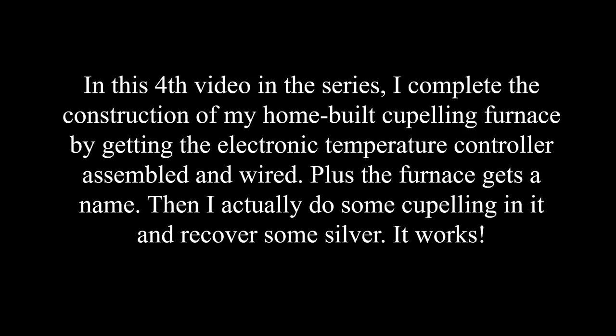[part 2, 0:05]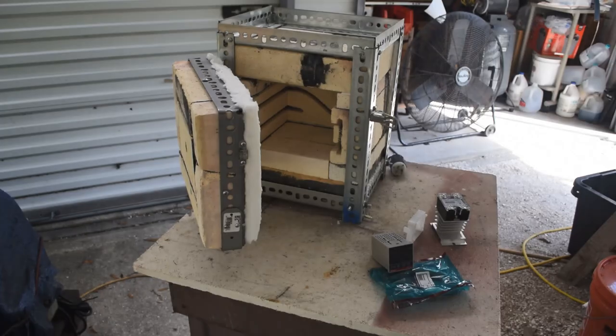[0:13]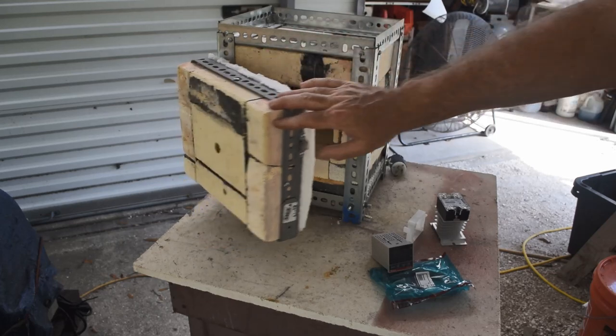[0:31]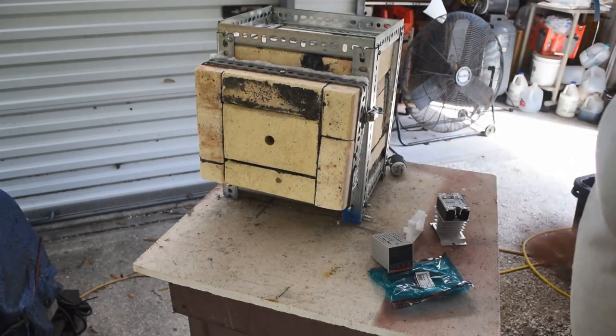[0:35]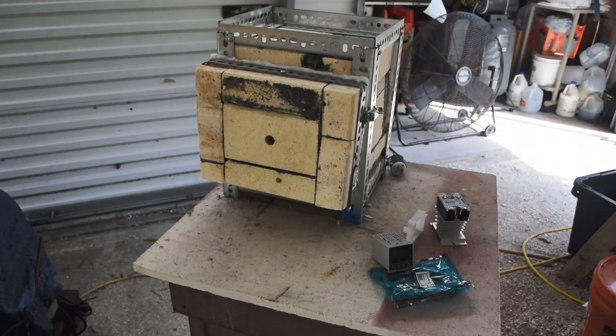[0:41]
And this is episode, what are we up to, 4? Of me working on my homemade cupelling oven. All right, time to get back to work on this, because it is almost ready for prime time. In the last video, I got the metal frame around it and hung the door on it. And, yeah, it's almost ready to go. I just got to mount the electronics on it for temperature regulation, and it should be good to go.
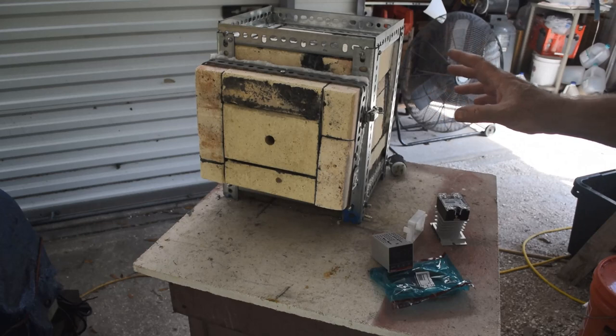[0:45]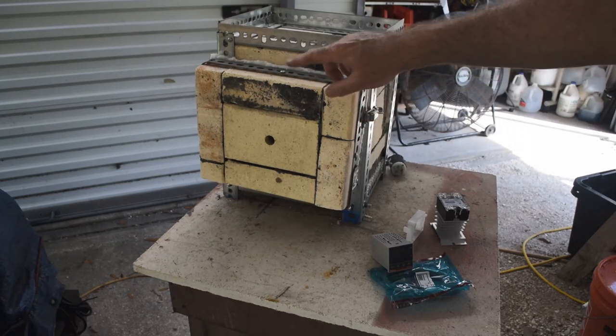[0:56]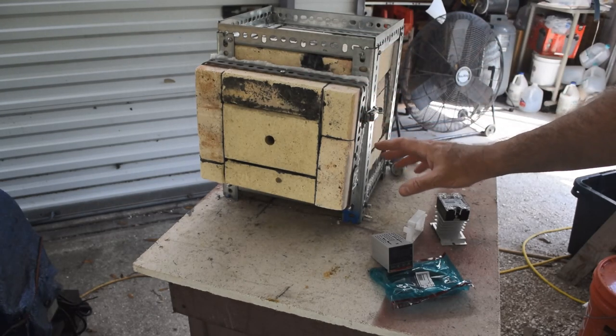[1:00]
Now, that video came out recently of part 3 of this, where I did all that work. And my buddy Jim commented that I should put a second catch on here. And I think he's right, because this door is pretty heavy, and the cheap hinges I used, I think, are going to sag over time. So when it's not in use, if I close it with both latches, I think that'll prevent it from sagging. So I will probably add another latch to this at some point. But I need to start working on the electronics to get this to a point where it's actually usable.
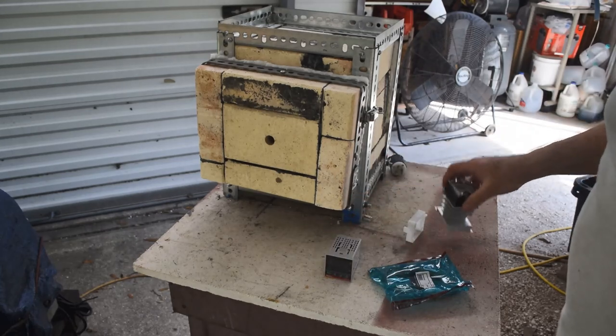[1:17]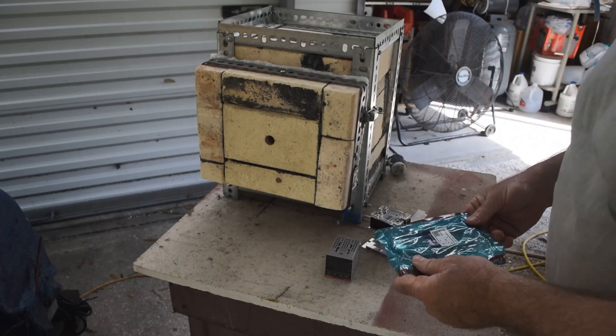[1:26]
Okay, so I've got the temperature controller here. Got the solid state relay mounted on its big aluminum heat sink here. And it also came with this thermocouple, which is only good up to 600°C. So I'm not going to use this.
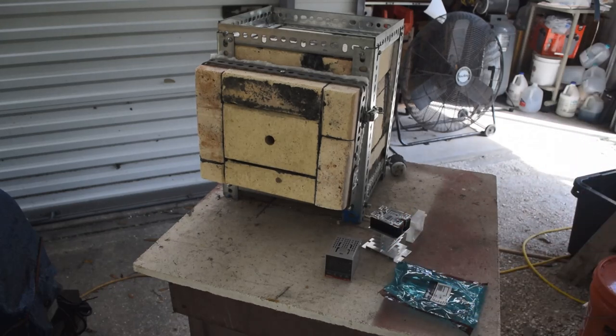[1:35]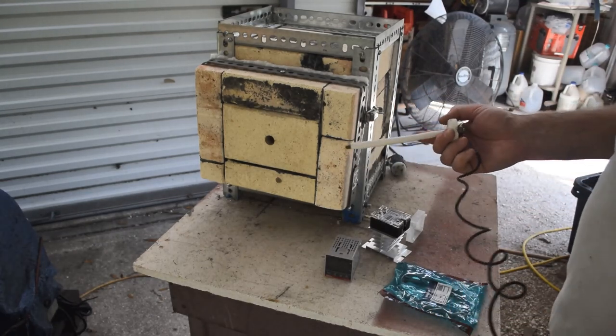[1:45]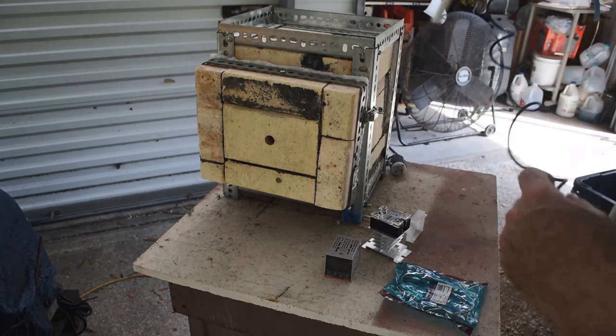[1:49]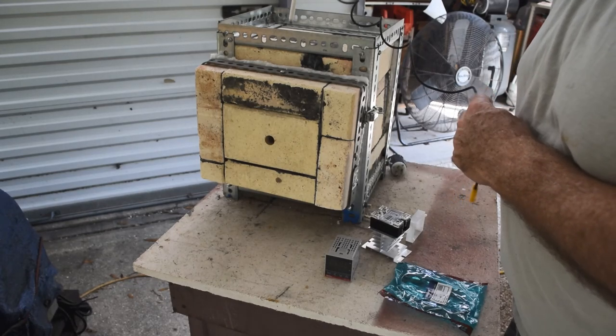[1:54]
You know, I have kilns, which is where a lot of this brick came from that I built this thing from. These are old kiln bricks. So I'm going to use one of the same type of thermocouples I use in my kilns. I'm going to use one of these. And what I think I'll do is I think I'll drill a hole in the top and then pass this down into the inside. And it could just sit there. It'll plug the hole. Should give me a good reading on the temperature. So I'm going to use that instead of this.
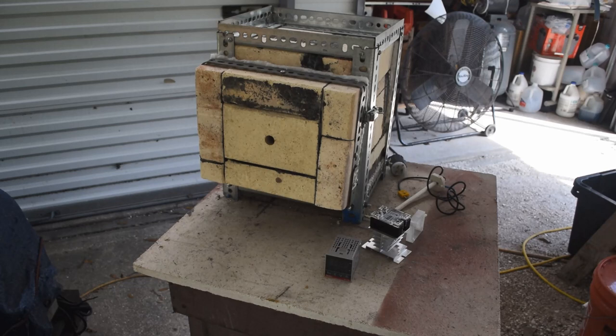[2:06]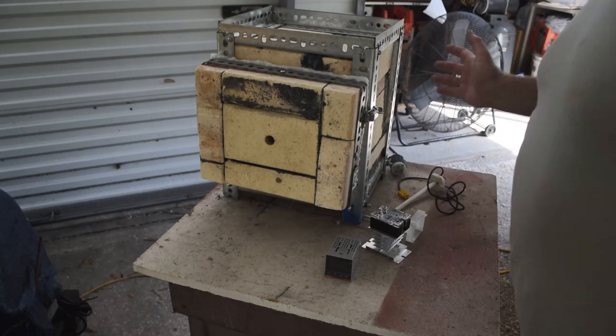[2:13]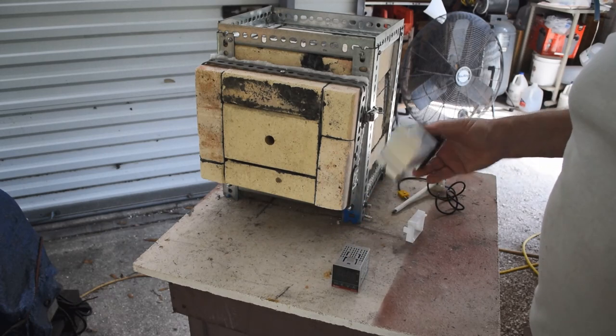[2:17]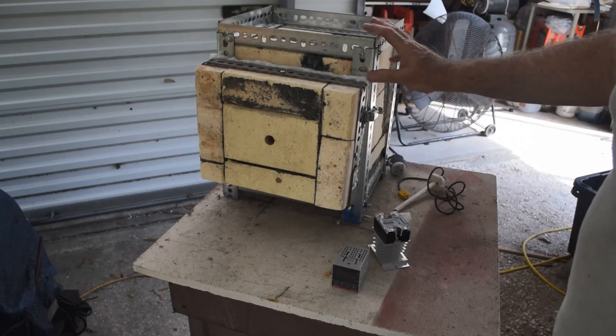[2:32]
Now, I struggled for a while with how to mount all this stuff on here. Now, the outside of this is going to get warm, and this is all plastic. This needs to be kept cool. We're only going to be stressing the solid-state relay to about a quarter of its rated amperage, but still, it may get warm. It's going to need to be cooled. So I don't really want to mount it to this hot frame here.
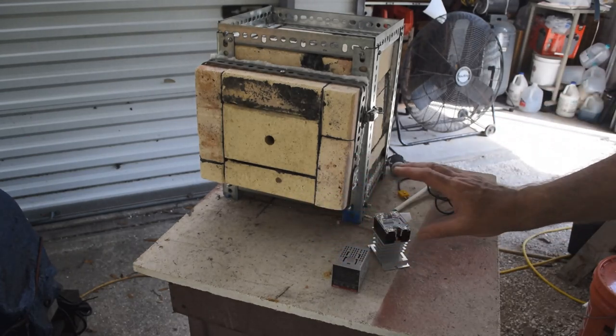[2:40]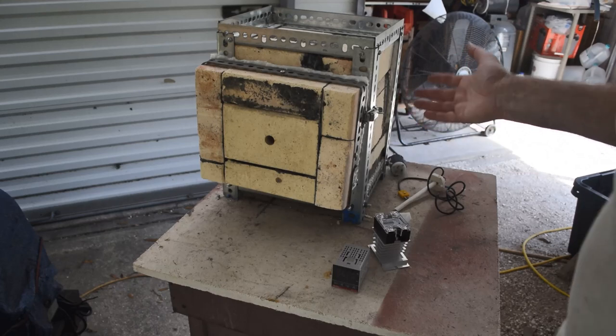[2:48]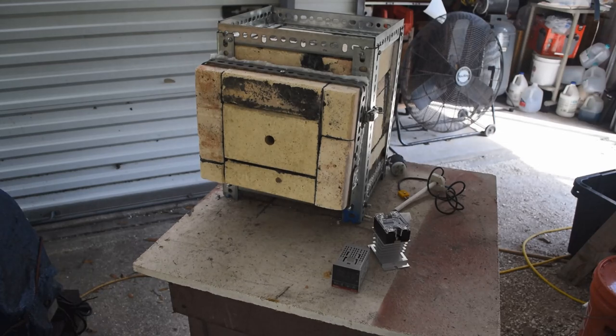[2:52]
So I struggled for a little while with how to do this. I know a lot of the commercial units have all the electronics mounted underneath. I didn't really want to go that route. I wanted this thing to sit lower so it'd be a little bit more stable at having the weight jacked up 6 or 8 inches in the air. So what I'm going to do, what I came up with, is this.
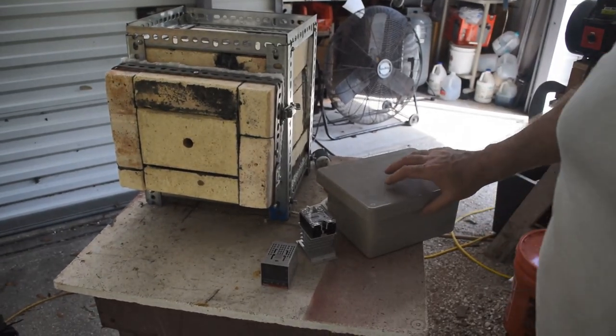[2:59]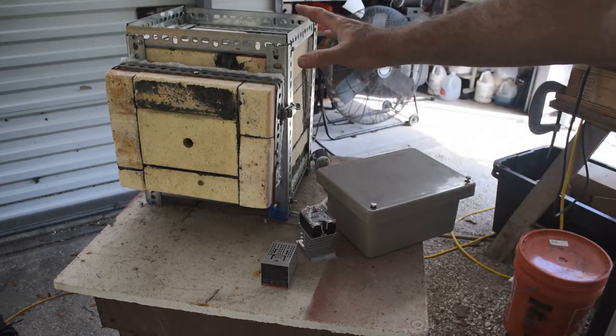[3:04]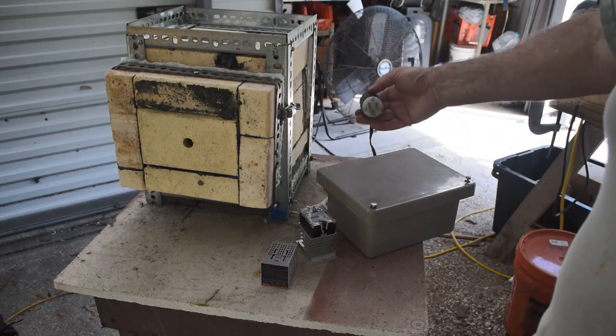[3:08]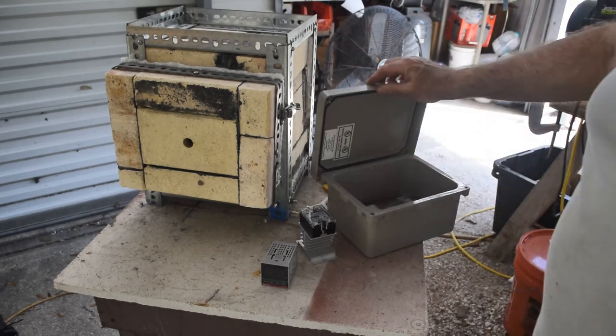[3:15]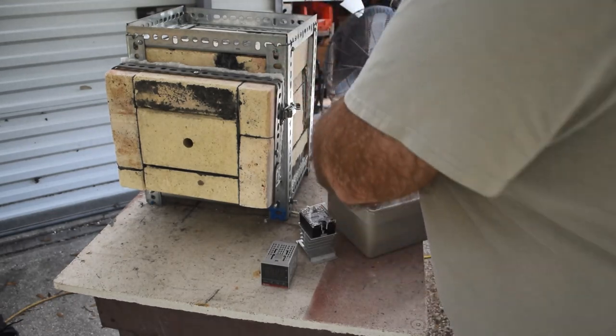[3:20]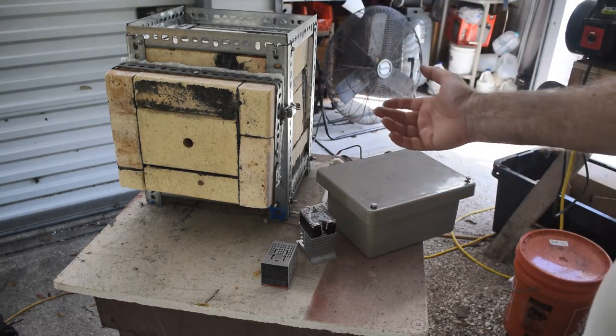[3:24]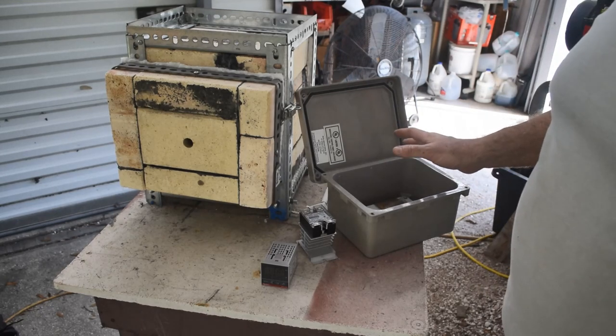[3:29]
I'm going to mount the electronics in an external box. And this is not going to be connected to this. This will be sitting off to the side. And what I'll do is I will put an electrical outlet on the back of it, and I will plug the heating elements for this into that. And this will control it. I will plug the output of the thermocouple into it. And this will control the heat. It'll throttle the heating element to get it to the temperature I want. And this will keep everything neat. It'll keep it away from the heat.
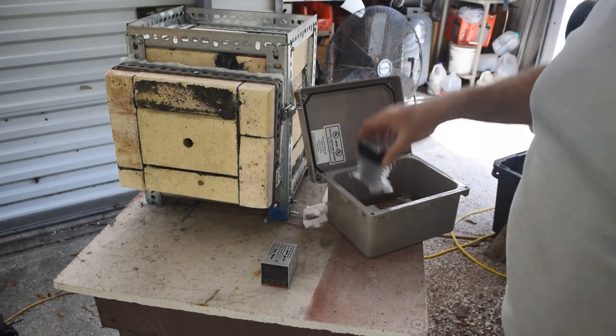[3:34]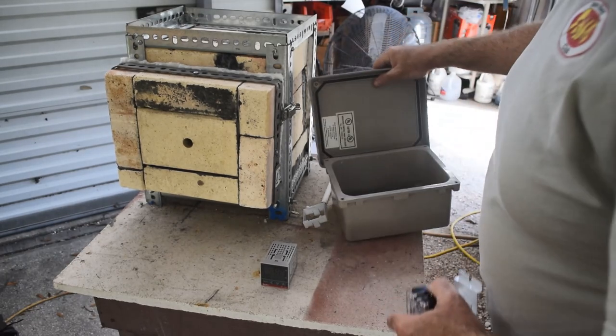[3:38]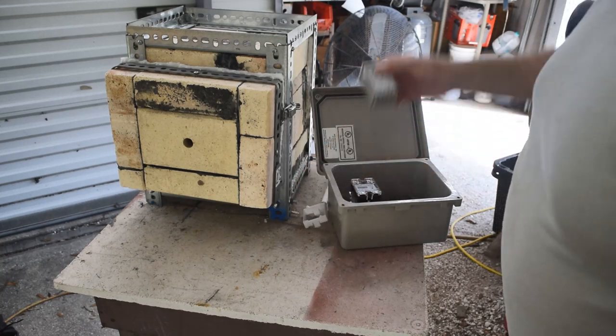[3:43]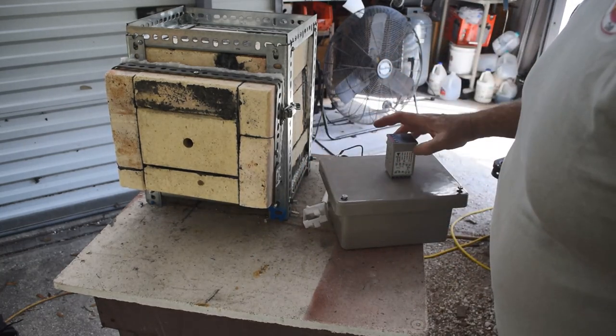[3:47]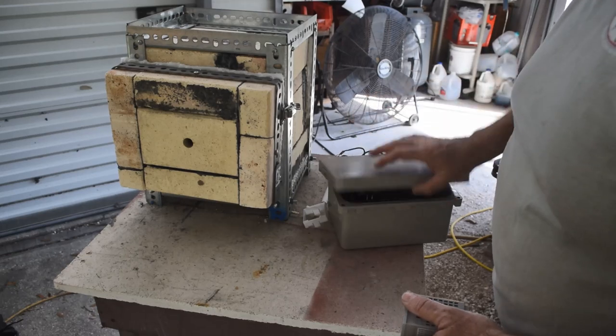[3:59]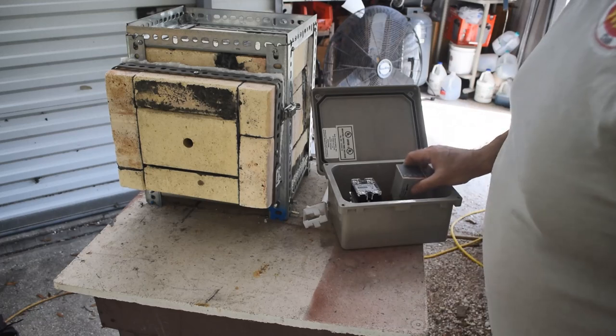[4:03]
I think this box is just big enough. It's got a mounting plate in the bottom of it here, a steel mounting plate. So I could drill some holes and mount this relay in here. I could get a square hole in the top here and mount this in it. I could have an on-off switch up here. Maybe a socket for the thermocouple to plug into, a K-type socket. And yeah, I think that'll work good.
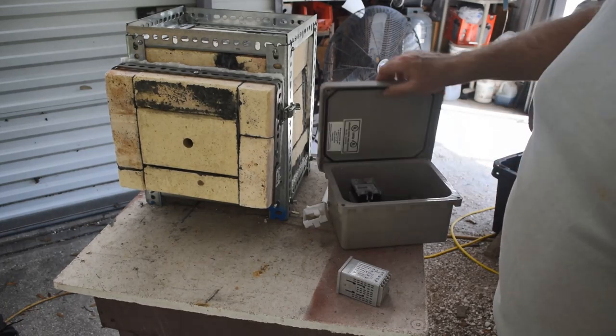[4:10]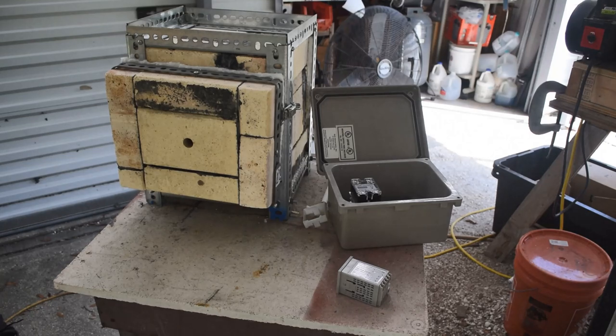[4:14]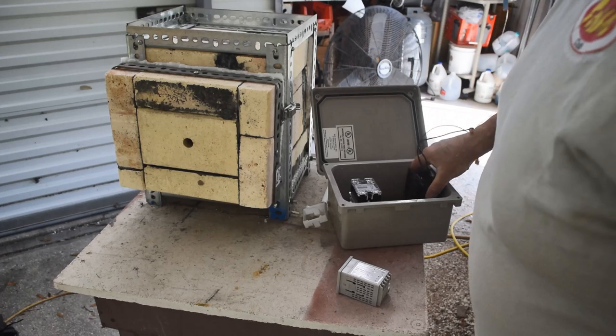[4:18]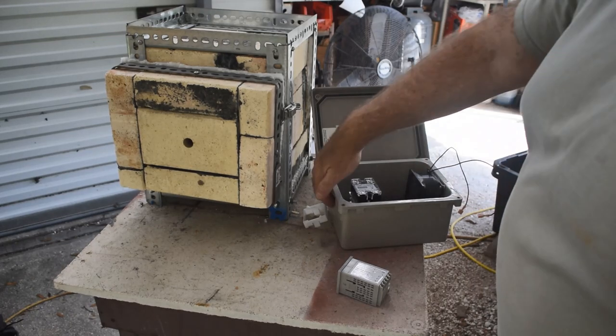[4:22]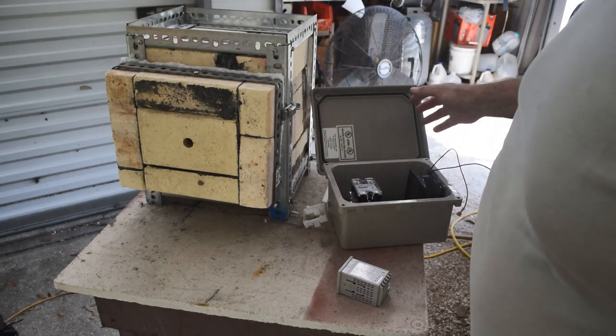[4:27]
Now, as I said, this relay, even though we're not stressing it too much, it might get warm inside this closed box, dissipating some heat as it operates. So I'm also thinking I could mount a fan in here. Cut a hole in this side and then cut a hole in this side and have airflow through the box. And I think that'll work good.
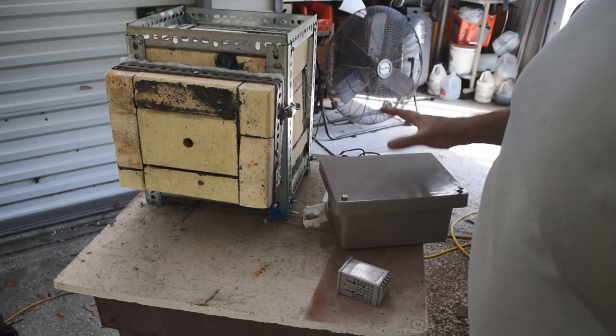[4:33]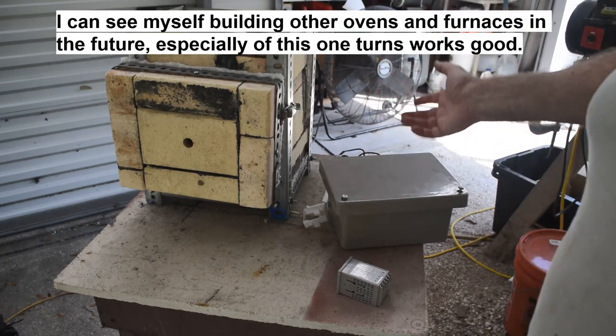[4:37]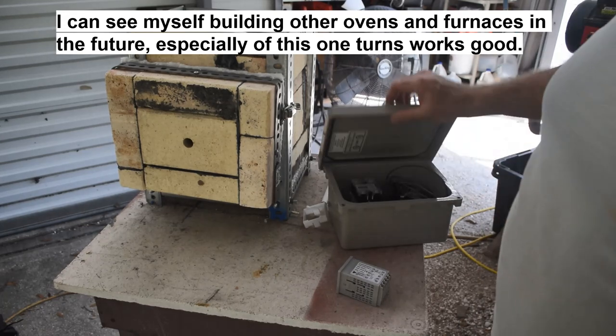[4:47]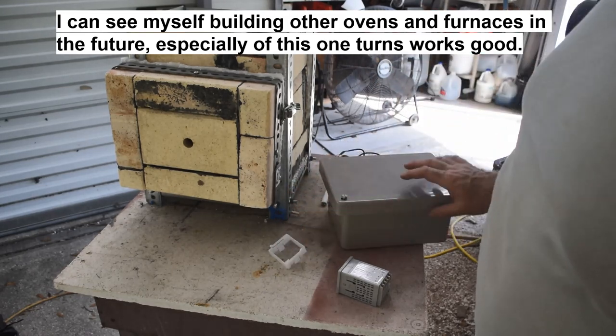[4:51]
And this box can become a multitasker then. I can use it to control other heating elements besides just this one. I can use it to control small kilns, small ovens, whatever I need. You know, it could come in handy for that. So this will become a multitasker. I can plug just about anything into it and have it control it. So, yeah, that's what I came up with.
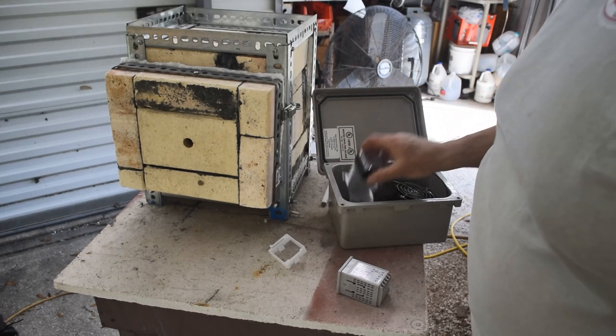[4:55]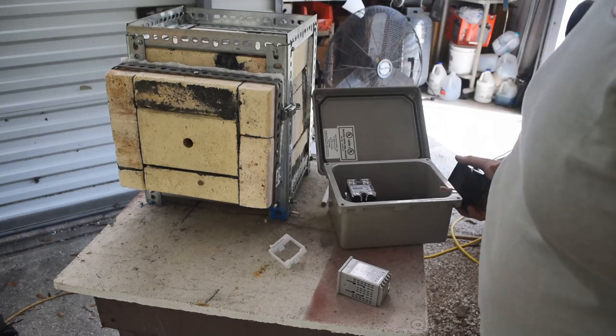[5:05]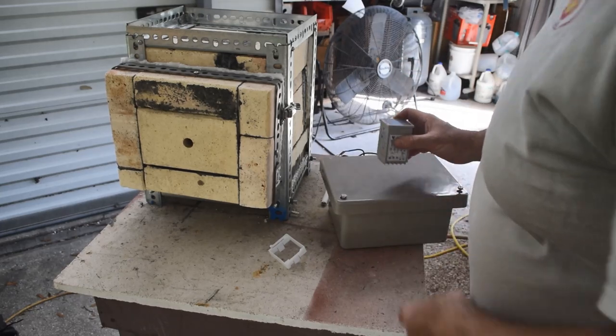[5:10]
So I need to start figuring out how to mount all this stuff in here. I think I can just drill a couple holes in this mounting plate down here and mount the relay in there. I'm going to have to cut some holes in the side of the box to get airflow for the fan. And I'm going to have to cut a square hole in the lid here for this, and I'm going to need a power switch and a socket for this, and I need an outlet on the back or somewhere to plug this into so that we can run the heating element.
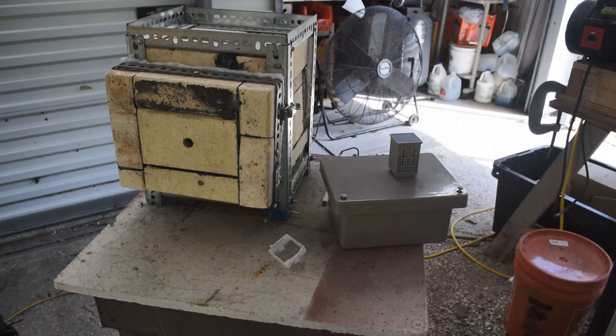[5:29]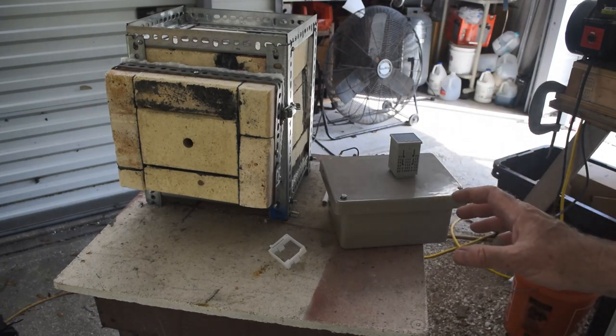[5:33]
So let me get to designing where I'm going to put all this stuff, you know, marking it out, and then get to cutting and see if we can get this knocked out in this video and get this thing up and running and maybe actually cupel something before the end of the video. Wouldn't that be great? Okay, let me get to work.
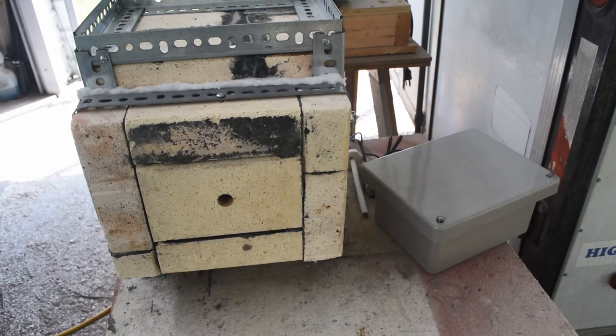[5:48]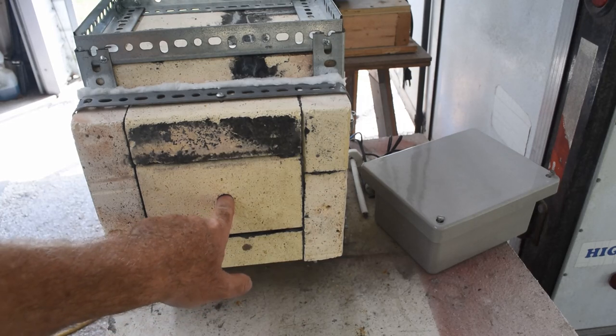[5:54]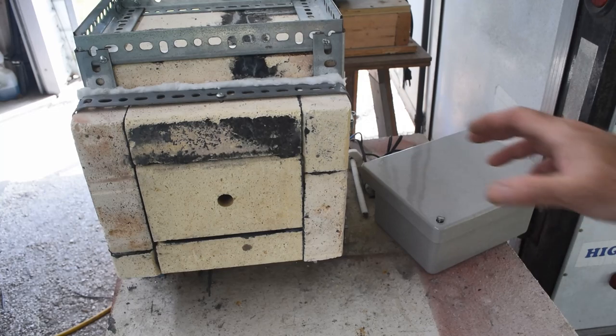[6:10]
Before I get started, let me address another comment or question that was made in the part 3 video. People want to know why there's a peephole here. What's it for? Is it for me to blow oxygen in? Is it for letting air in? Well, I'm going to use it for letting air in. Right now it's plugged with ceramic fiber. Let me open the door so you can see that. It is plugged with ceramic fiber.
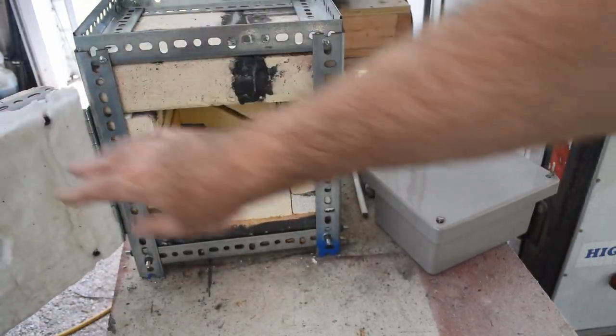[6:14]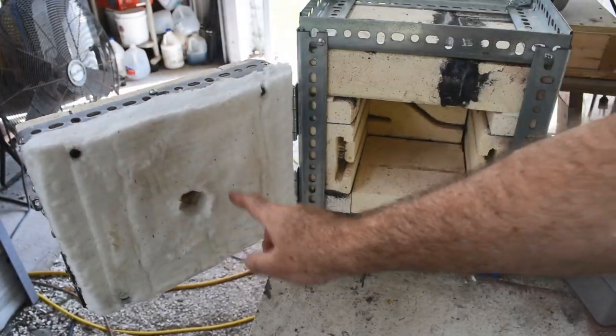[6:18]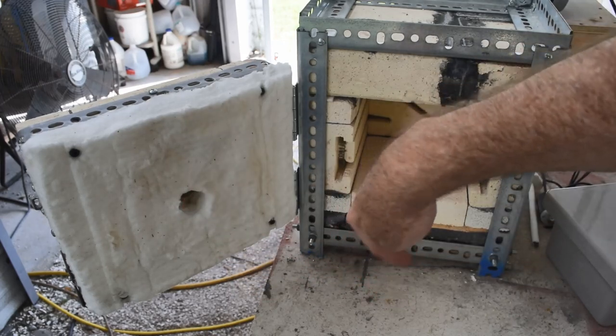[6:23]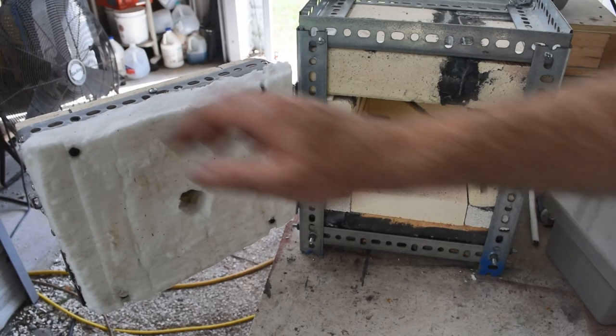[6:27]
Well, I don't even know if you can see that. It's up in there. It's all plugged with fiber. Okay. I did make a hole in the fiber gasket so that if I want to unplug that hole, air can get in to oxidize lead or bismuth, whatever I'm using. But what is the actual purpose of this hole?
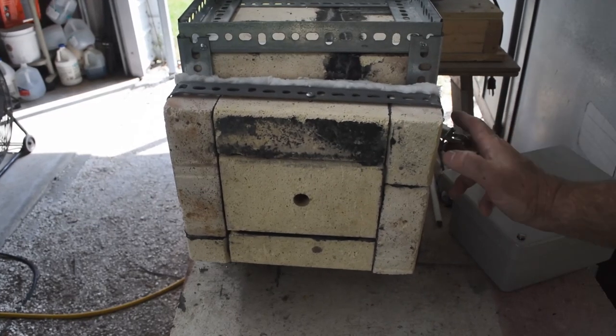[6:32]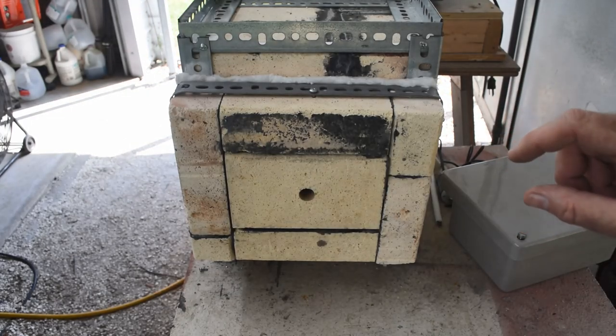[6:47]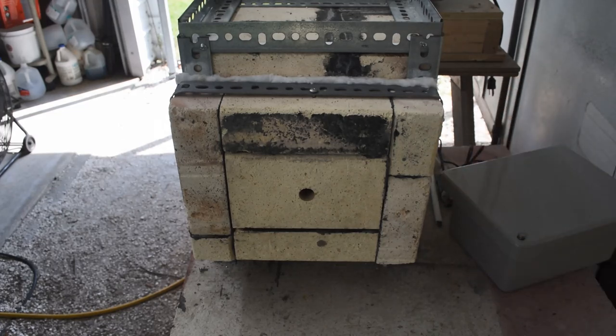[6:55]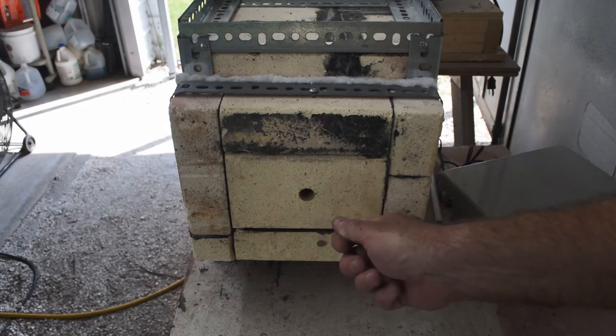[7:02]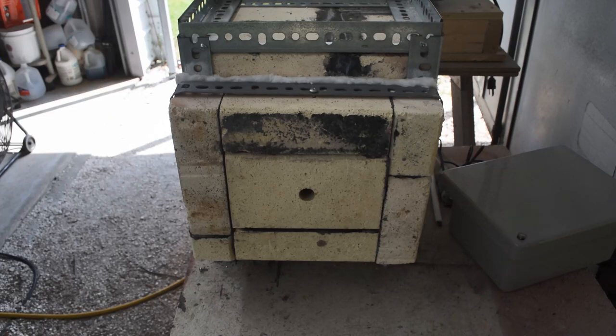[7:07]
Since these are kiln bricks that I built this thing out of, a lot of kilns, especially older ones, have a series of peepholes built into them. And they're so potters can look inside and see if their cones have melted. Potters use cones that melt, little ceramic cones that melt at different temperatures to gauge the temperature inside their kiln. And they'll put a line of cones that melt at different temperatures inside the kiln, and then from time to time they'll pull out a plug and look through the peephole and see which cones have melted and which haven't, and they'll get an idea of what temperature their kiln is running at.
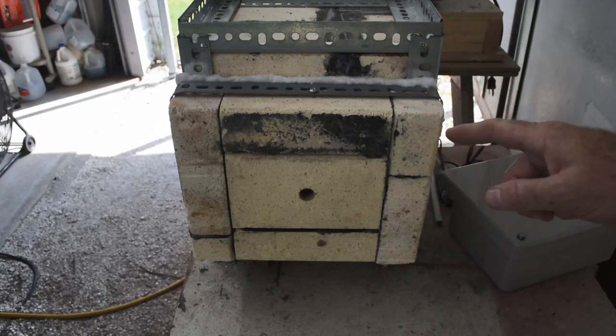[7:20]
Well, things have moved on a lot in the last, you know, 1,000 years or so. So now we have digital temperature controllers and thermocouples, and that's what I'm going to use to control this thing. The thermocouple will measure the internal temperature, and a digital controller will throttle the heating element to maintain the temperature I want. We don't have to look at cones melting to see what temperature we're at.
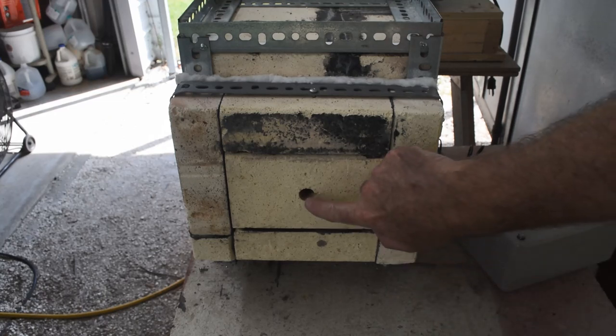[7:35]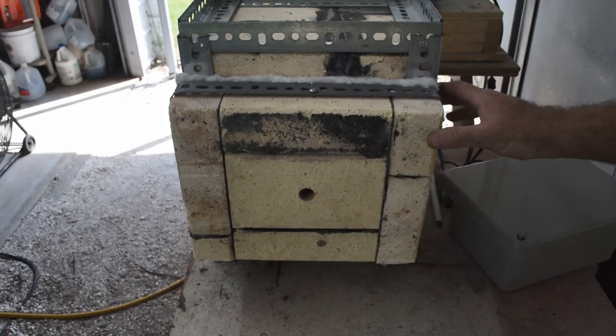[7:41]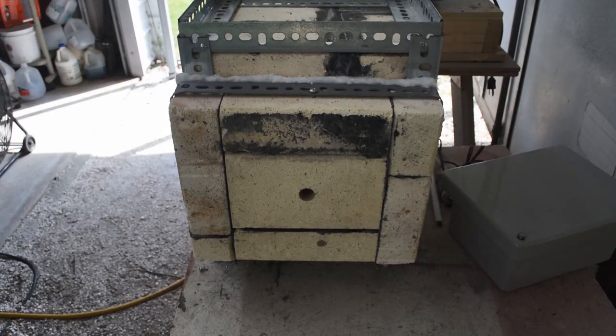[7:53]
But that's what the peephole is for originally, and I'm just going to use it as a way to get extra oxygen in there if I need it, or I could just crack the door open a little bit and let oxygen in and let the fumes out. So that's the answer to that burning question. Might as well get that out of the way. Now let's get to work on this.
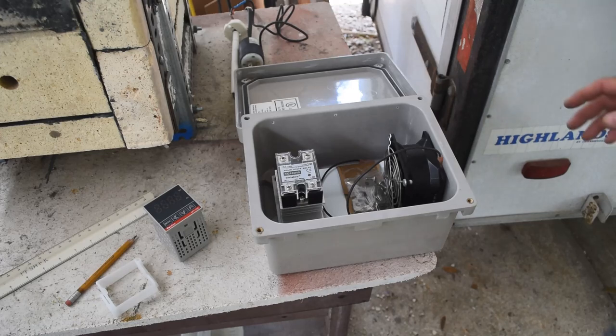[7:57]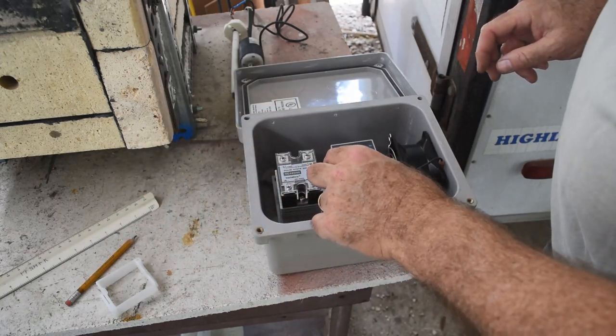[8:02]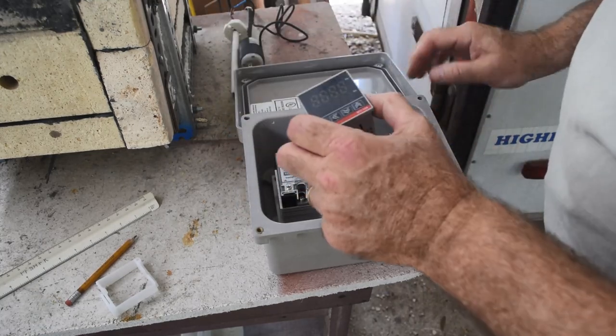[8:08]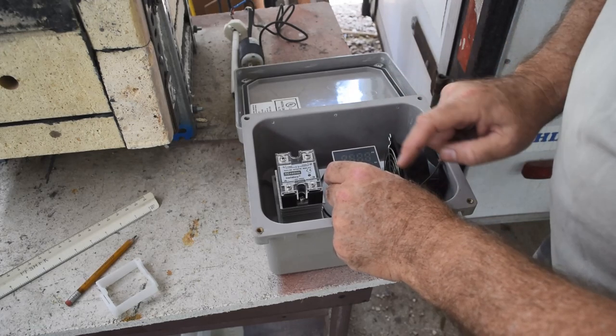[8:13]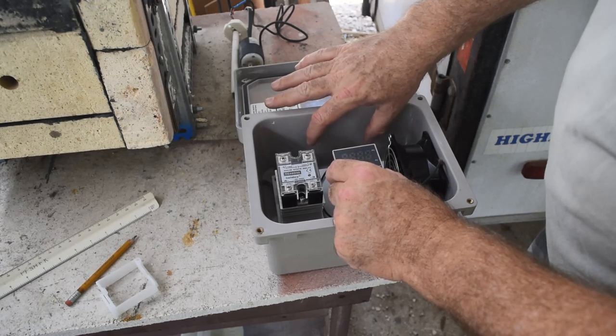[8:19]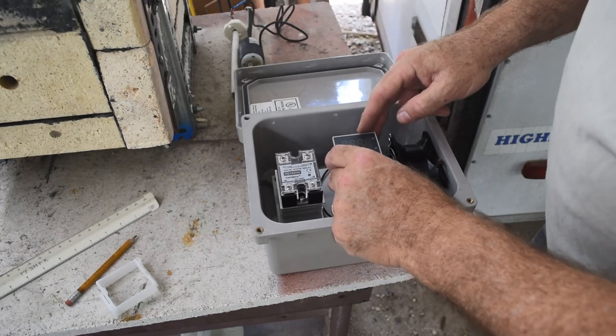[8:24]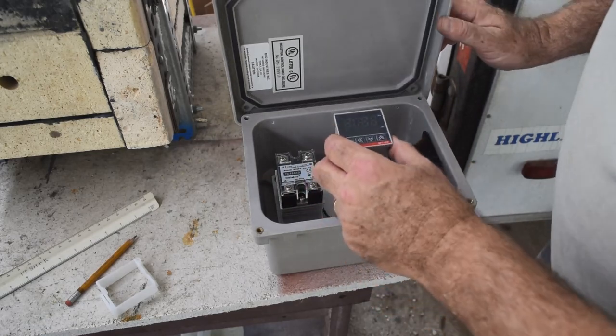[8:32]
So it's time to put on my designer hat and figure out how I'm going to do this exactly. So this has got to go in here. So it looks like roughly in the center of the lid is where this is going to have to be mounted, so that there's space for everything. In fact, I might mount it a little towards the front of the box here to make room, because I'm going to need to put some sort of electrical outlet in the back to plug the furnace into. So I may move this forward of the center some. I'm calling this way forward. But yeah, it looks like in the middle is going to work.
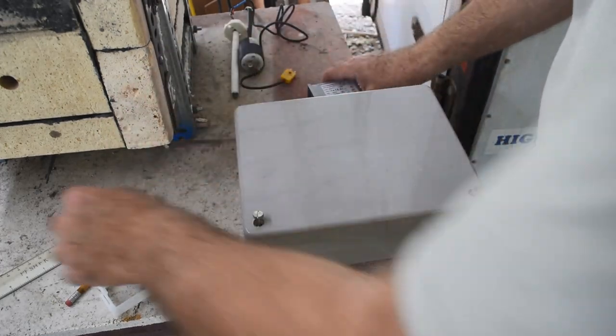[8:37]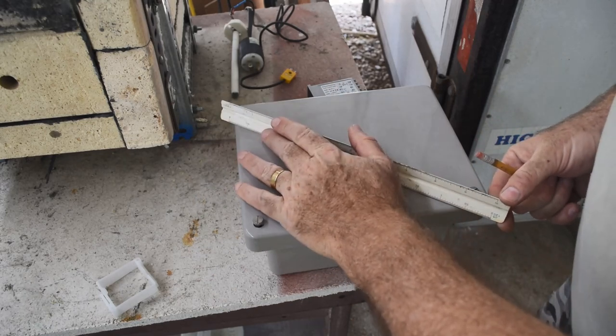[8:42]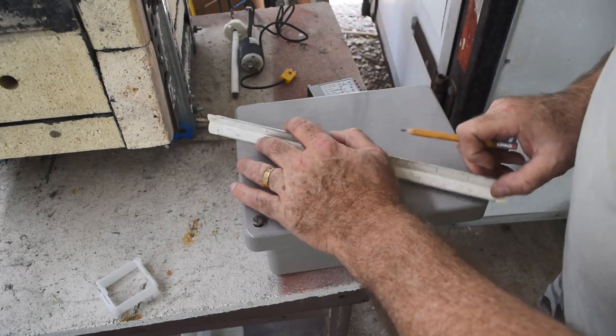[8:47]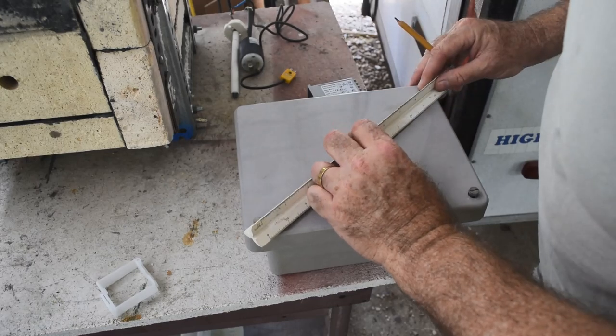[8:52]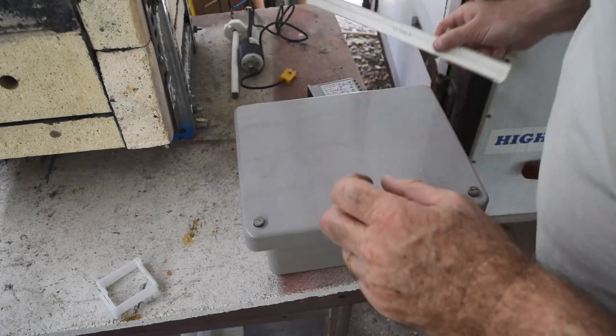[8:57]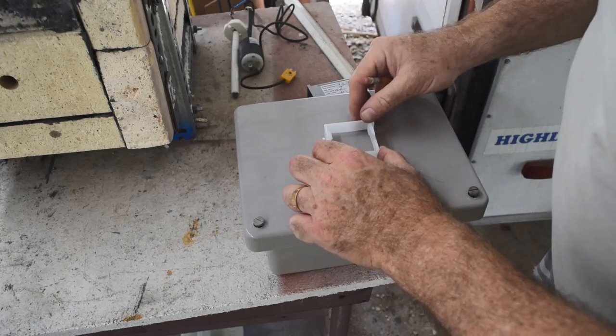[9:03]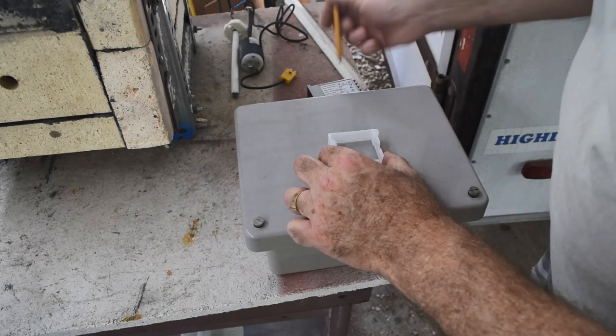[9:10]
So let me find the rough middle of this thing. This should just be good enough. As a friend of mine would say, we're not building a space shuttle here. Close enough should be good enough. So, I miss that guy. I haven't seen him in a lot of years. So, that would be roughly center, but I'm going to move it down this way some to make room in the back over here for an electrical outlet.
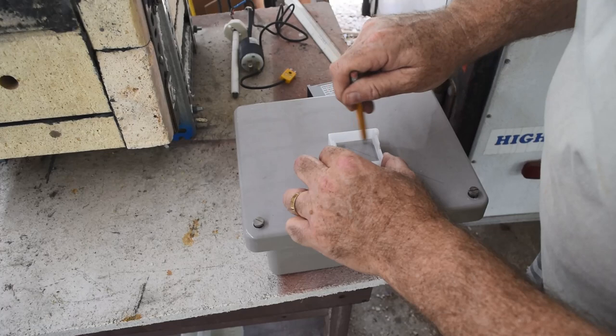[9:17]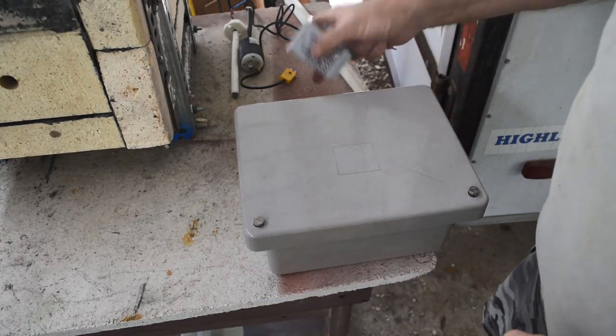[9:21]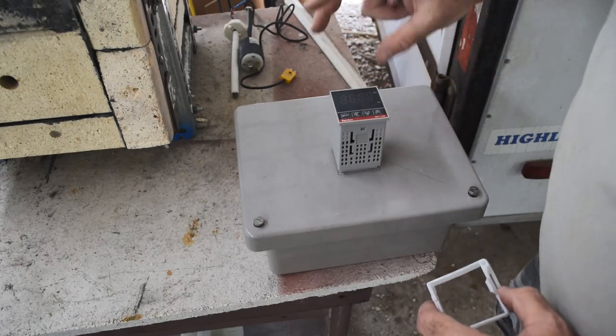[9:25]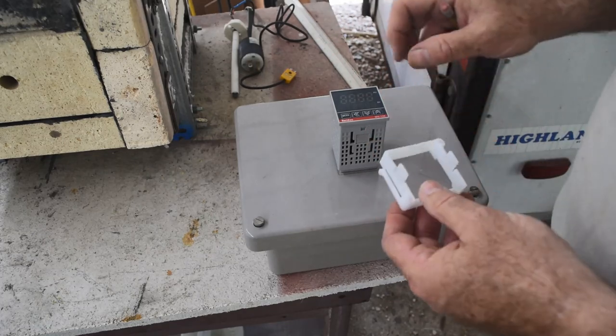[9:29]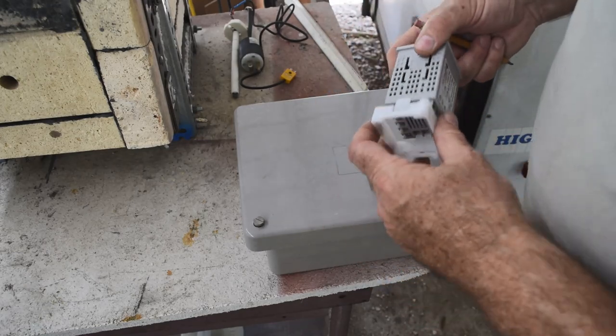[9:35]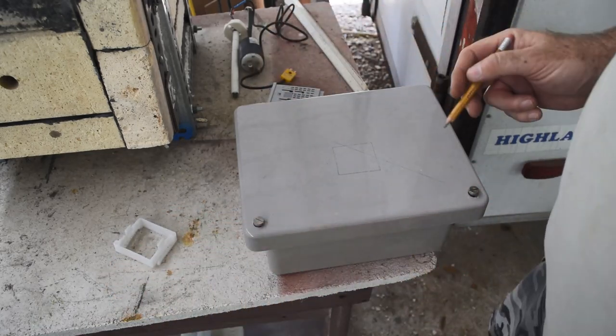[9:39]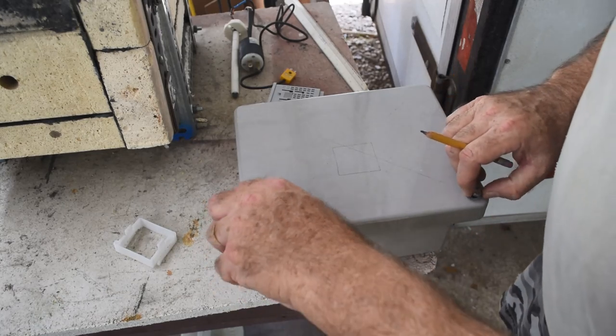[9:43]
Okay, so I need to cut that out so that this can drop in. So I'm going to need to cut it out a little oversized. Cut on the outside of the lines by the looks of it. And I may have to file it a little bit. But hey, undersize is better than oversize. And then this will lock it in place from the back once it's in. Okay. And there needs to be like a power switch for this.
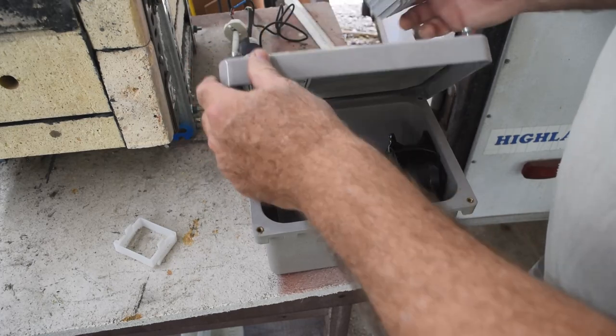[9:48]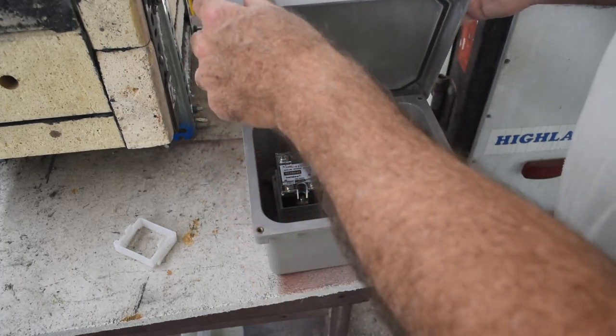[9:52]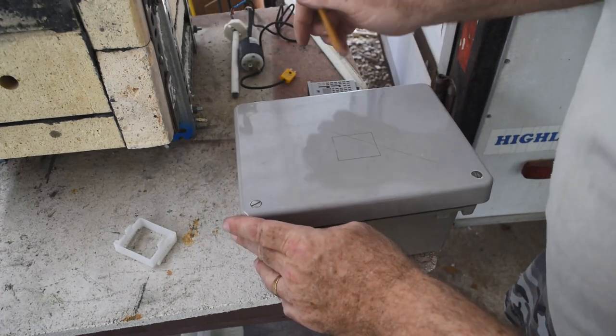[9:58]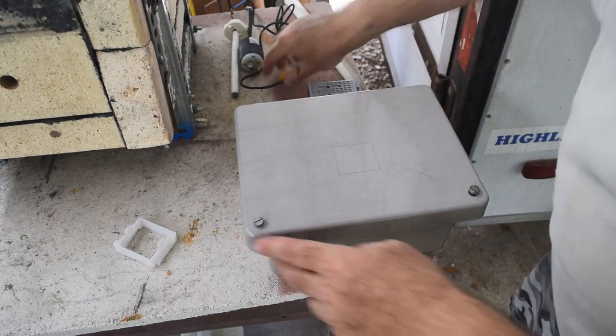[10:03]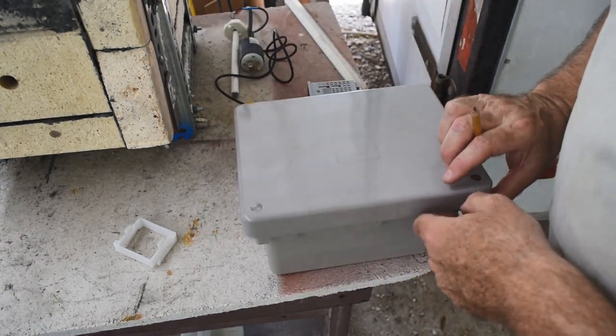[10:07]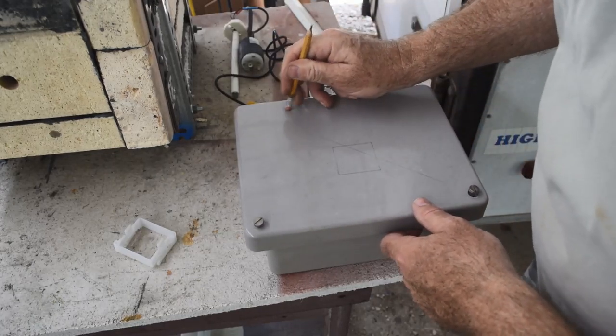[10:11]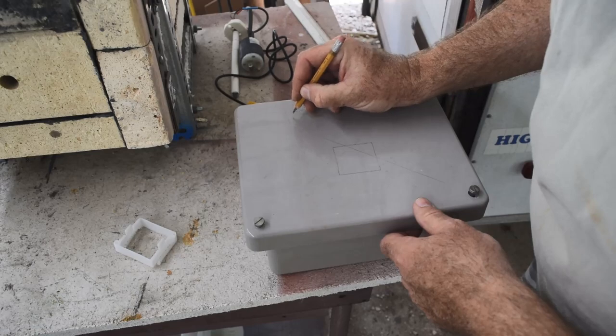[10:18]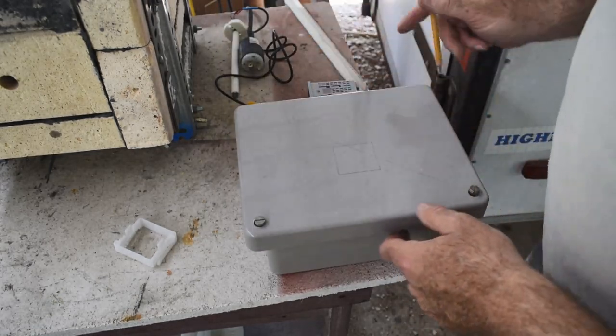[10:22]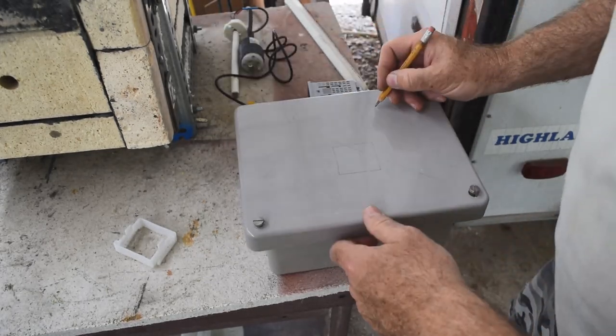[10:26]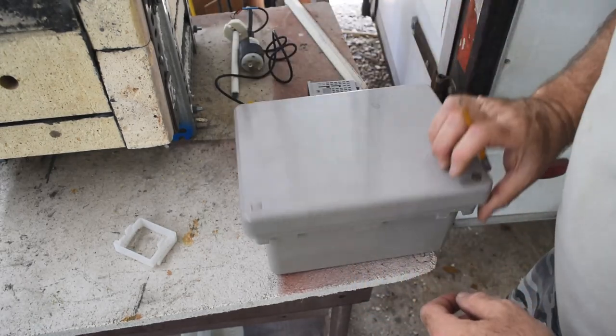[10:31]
So let's see, you can put a power switch just about anywhere. There's going to be plenty of room for that, I'm thinking. And I'm going to need to put probably a socket to plug the thermocouple into. I may need to move this forward a little bit just because there's a ledge back there. I'll put that in roughly over here. I think that'll work. Yeah. And then a power switch. We'll just put it in roughly about here, I guess. A nice power switch for on and off.
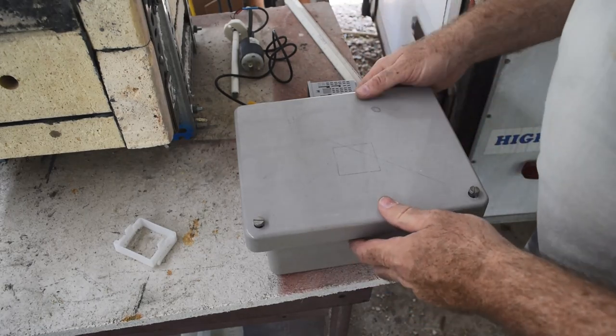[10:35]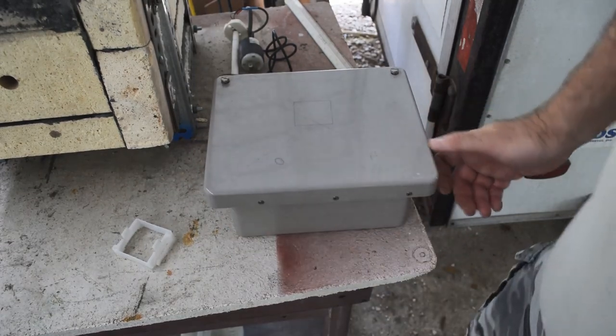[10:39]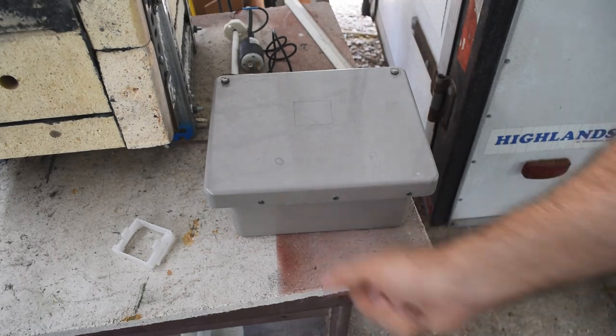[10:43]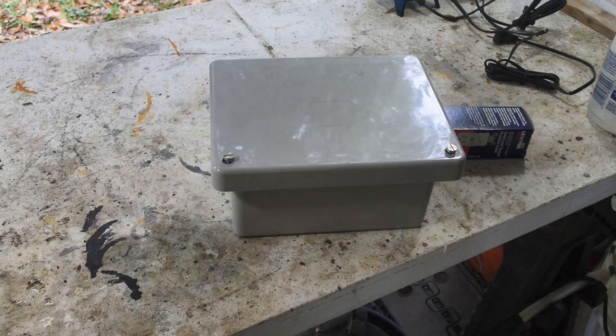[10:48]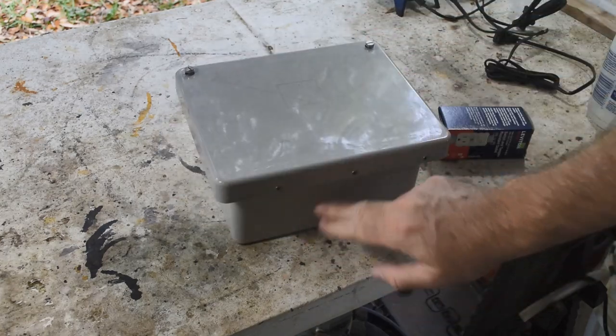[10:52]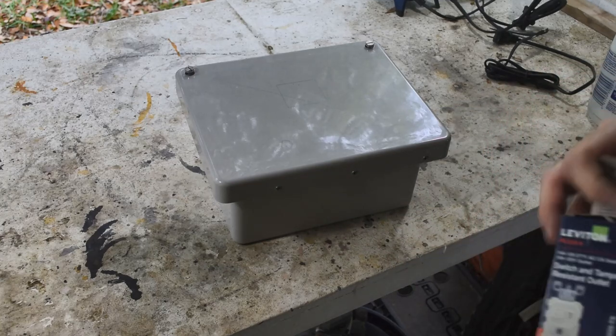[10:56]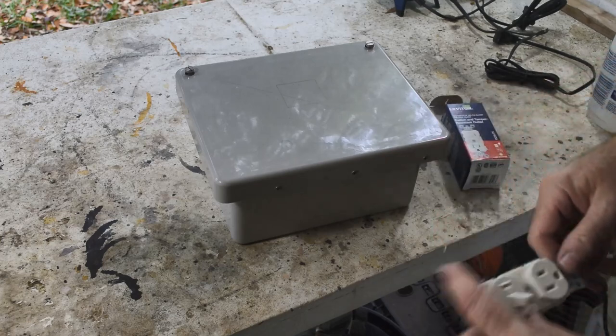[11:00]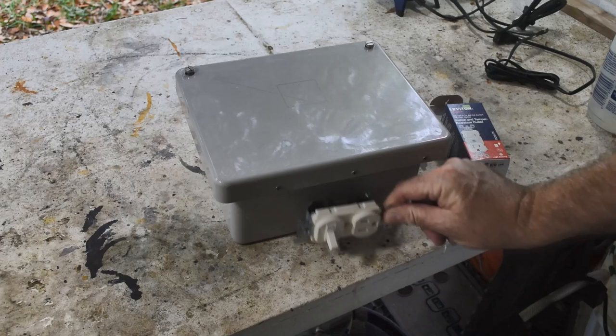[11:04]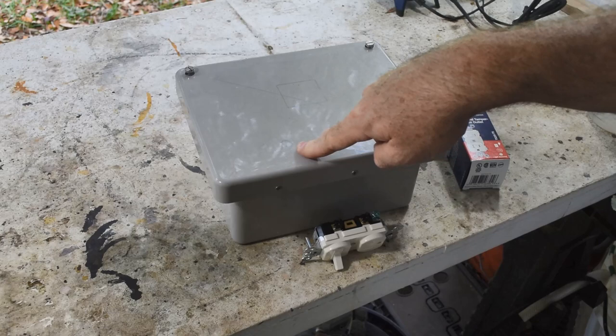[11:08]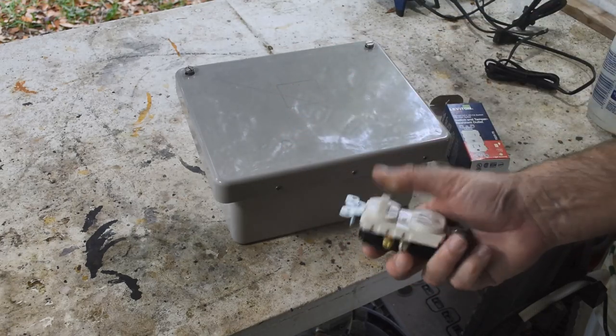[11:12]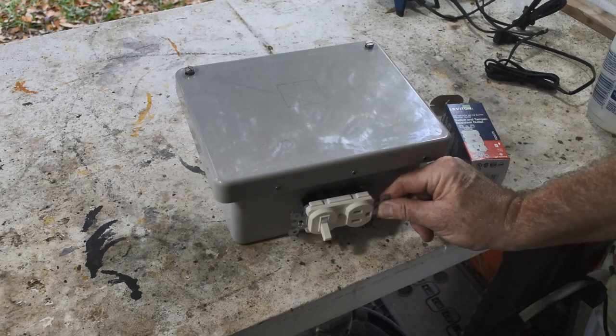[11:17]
And then I need to dig up some sort of outlet for in the back. Let me go dig through my junk boxes and see what I've got that I could mount on the back that I can plug the furnace into. All right, so I rooted around in my junk box. Couldn't find any kind of workable electric outlet to put in the back of this. So here's what I came up with. I went down to Home Depot just looking for a single outlet to put in there. And I found this, and I thought, well, that'll kill two birds with one stone. I can mount that back in here, and I won't have to locate a 15-amp toggle switch to put in here because there's a 15-amp switch right there. So that could be the on-off switch as well as the plug for the furnace.
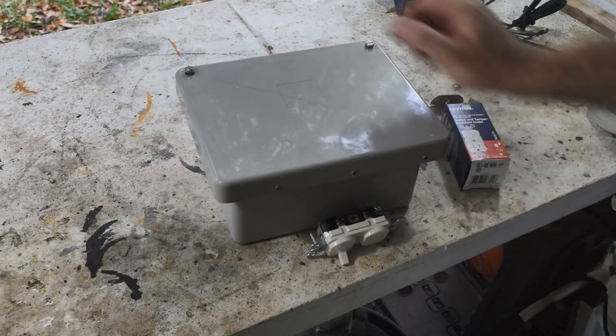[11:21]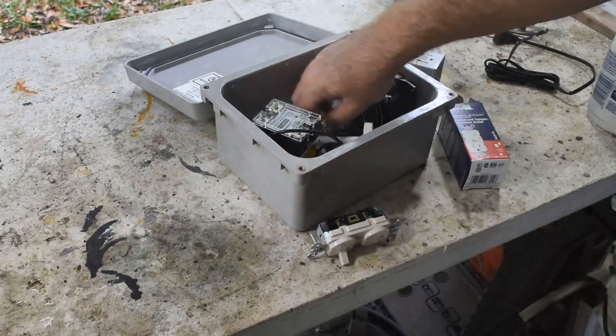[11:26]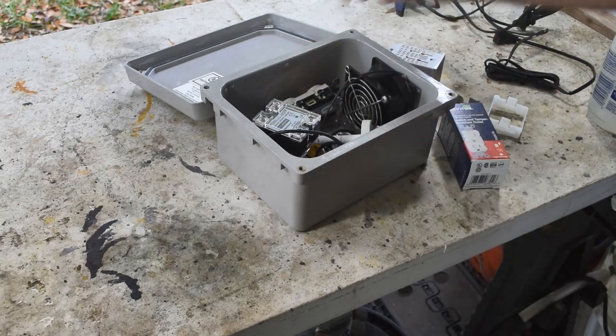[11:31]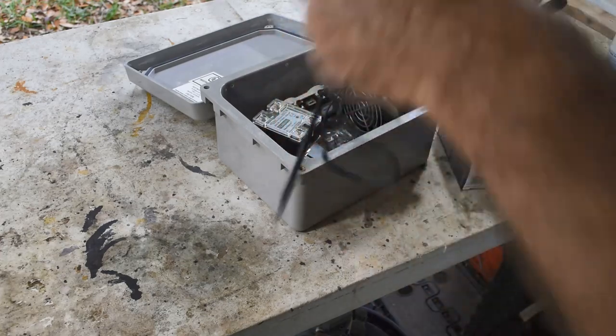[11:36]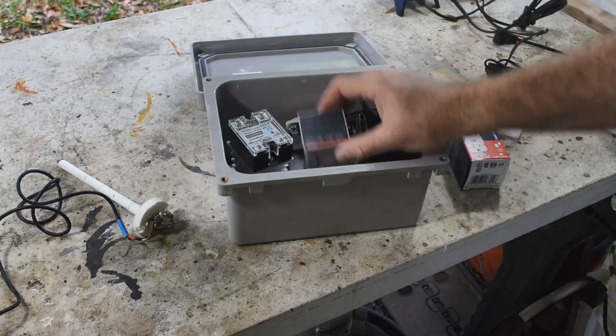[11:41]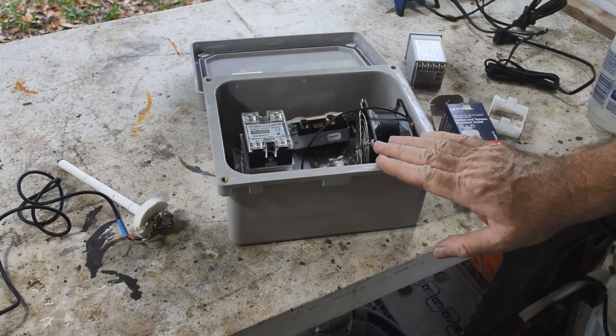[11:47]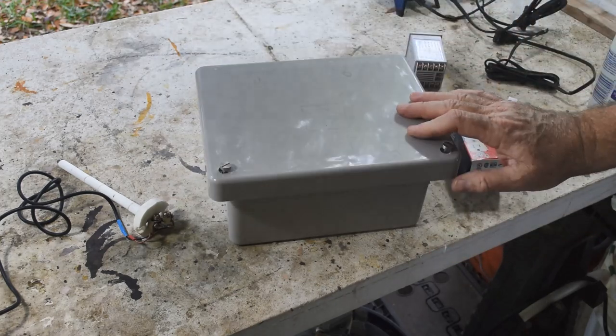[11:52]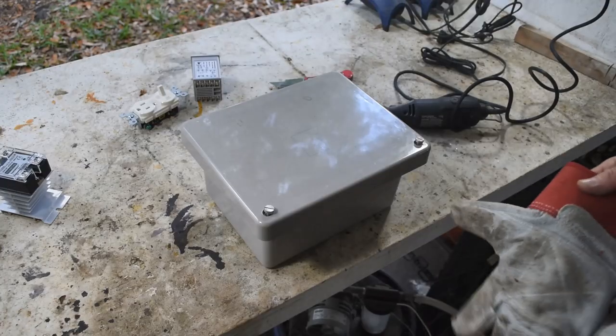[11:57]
So I just need to put some holes in the back of this. Can mount that in there, and there should be room for everything. This, of course, isn't going to be in here. This out of the way. But yeah, everything should fit just fine. So, I need to start making some holes in this box and mounting stuff, and then wiring it all up. And then maybe we can get to cupelling. Okay, let me get started cutting holes in this thing.
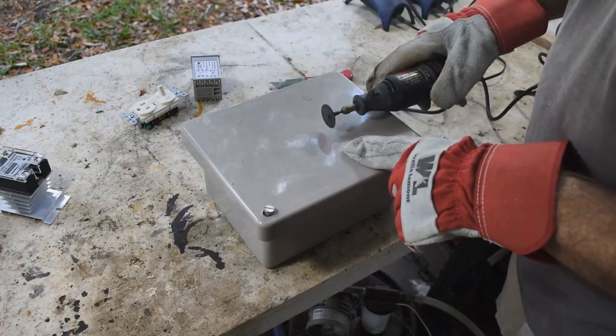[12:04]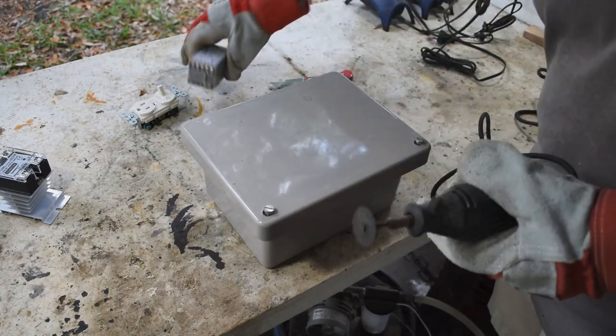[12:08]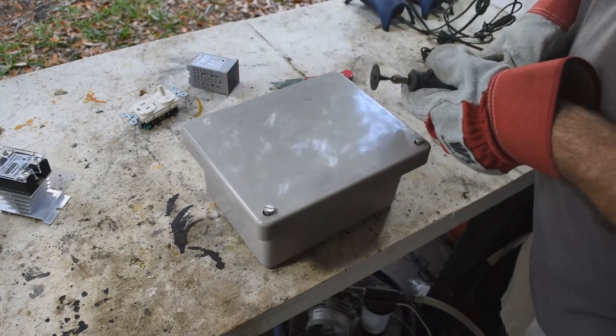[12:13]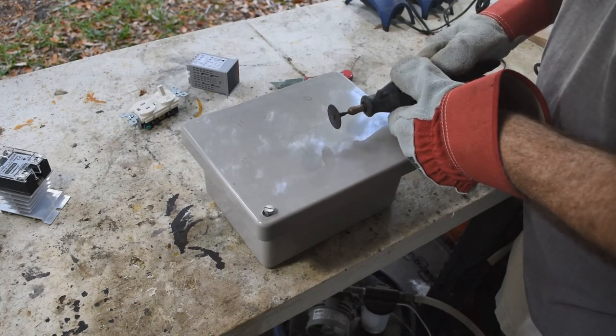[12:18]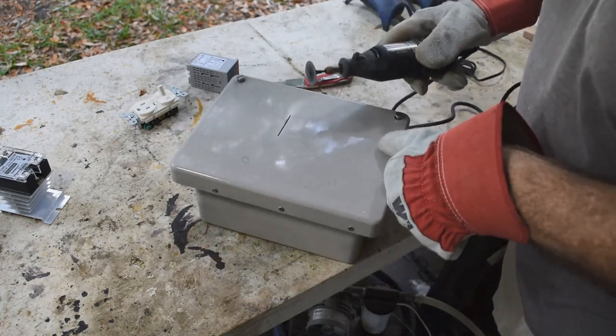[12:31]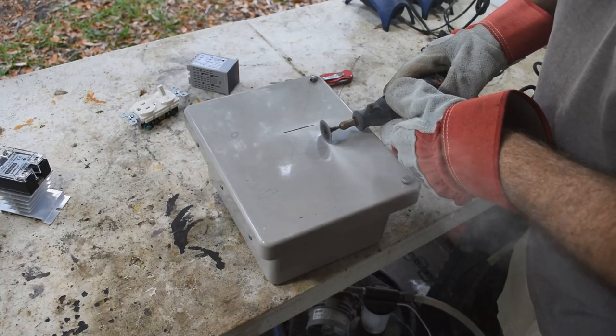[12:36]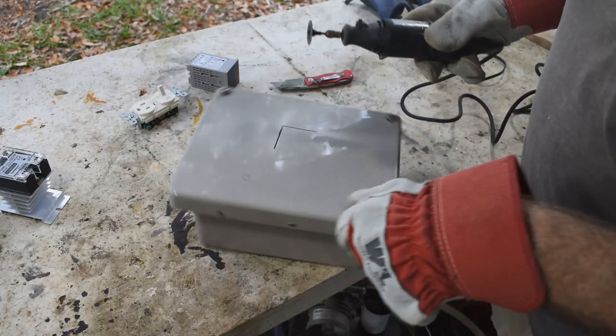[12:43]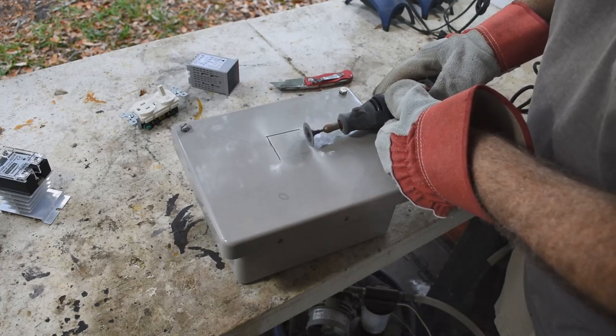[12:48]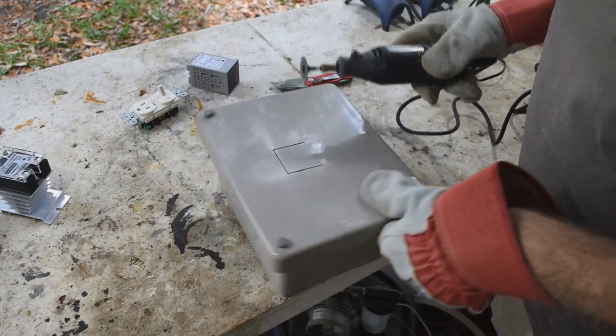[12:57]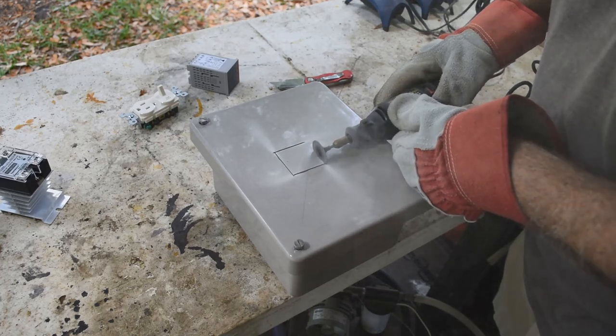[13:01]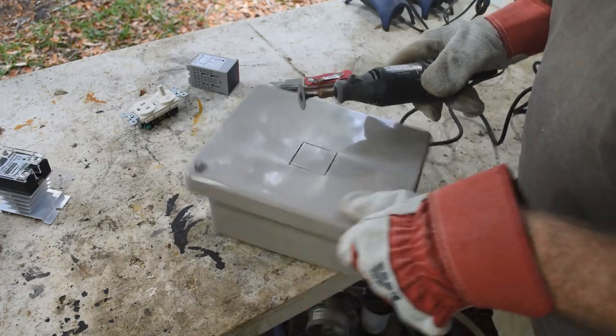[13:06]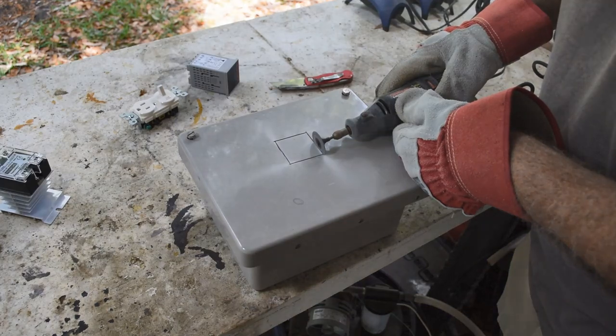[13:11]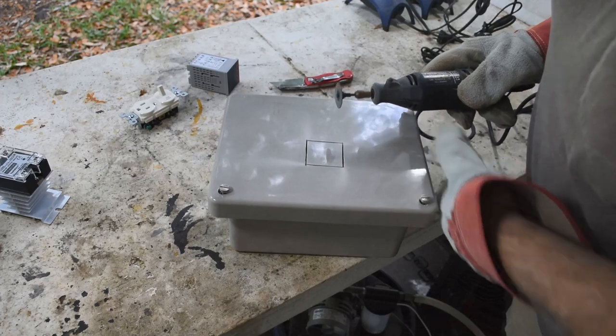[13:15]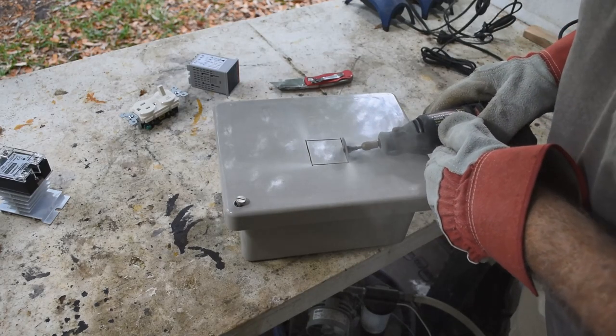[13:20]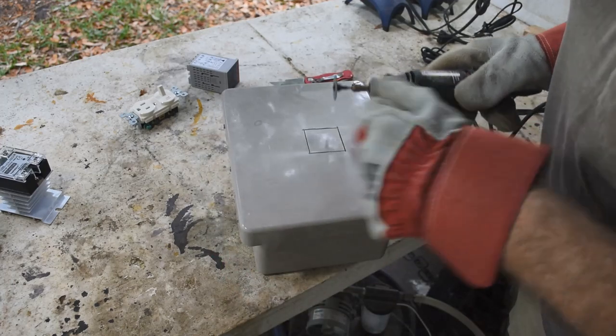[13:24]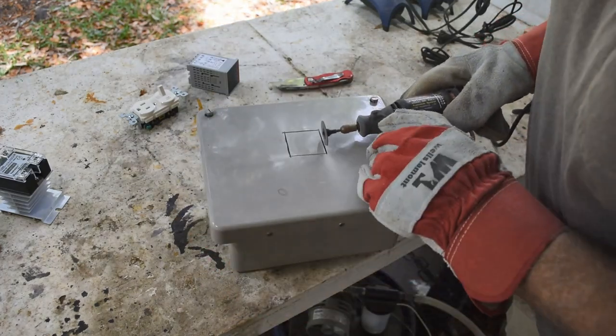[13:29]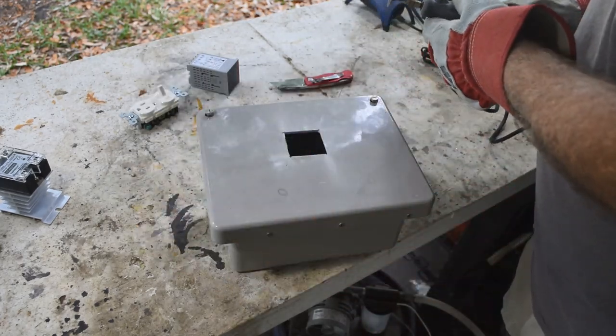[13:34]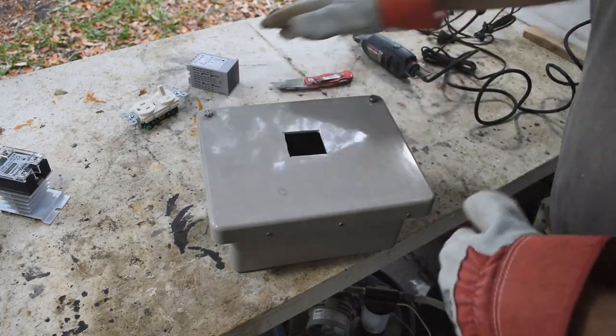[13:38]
I am wearing a dust mask and eye protection. I use my Dremel. I'm going to cut out a square here for the controller. Yeah, wear a dust mask when you do this. You don't want to breathe that fiberglass dust, that's for sure.
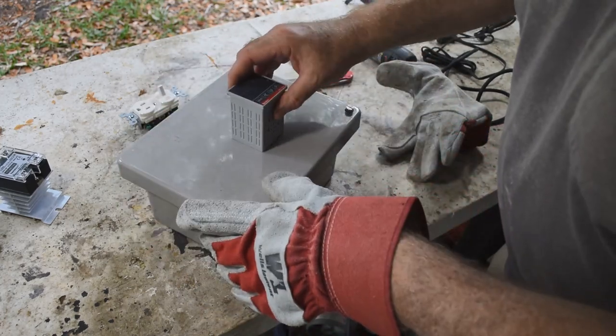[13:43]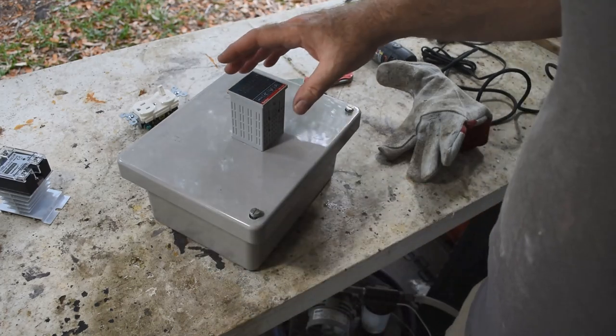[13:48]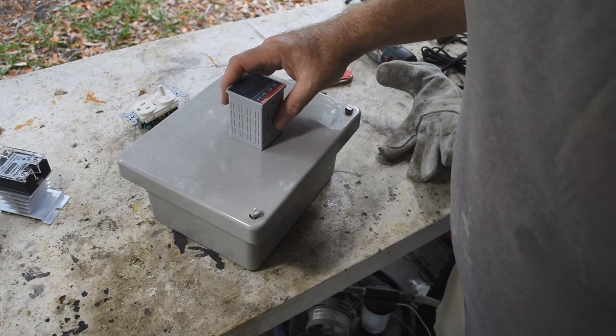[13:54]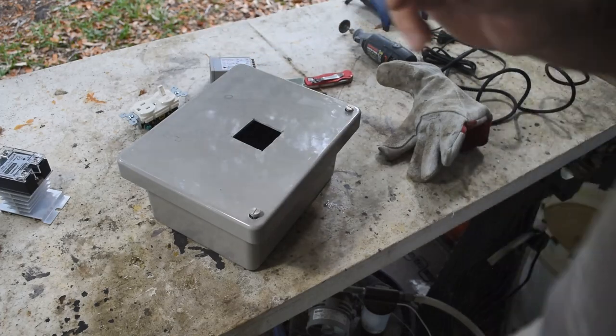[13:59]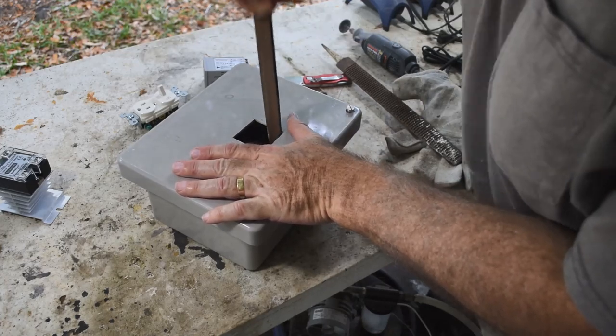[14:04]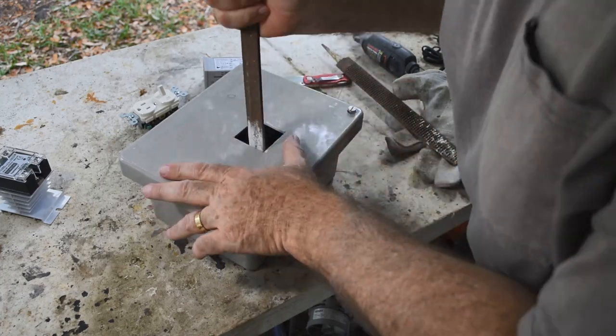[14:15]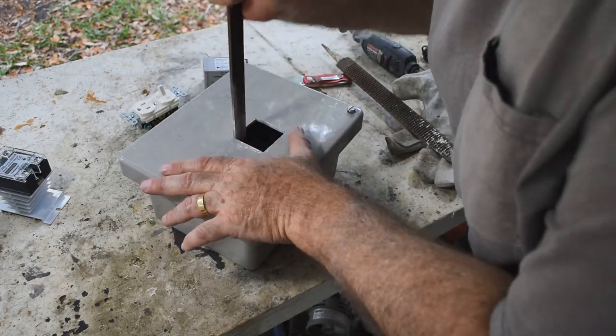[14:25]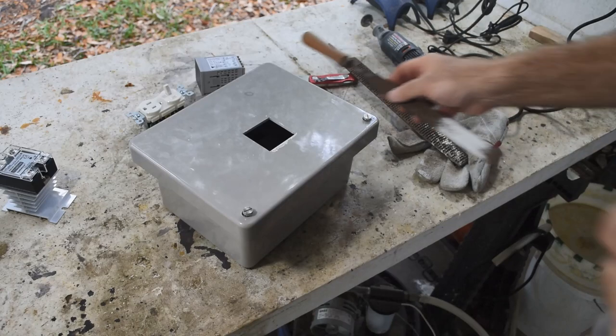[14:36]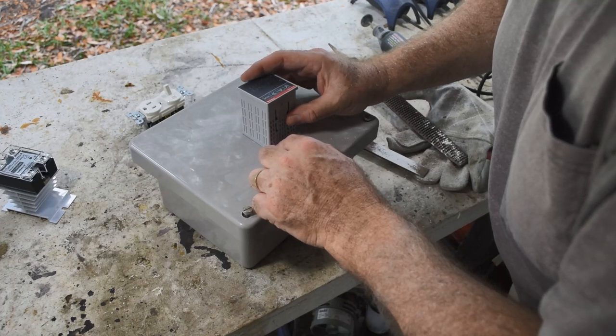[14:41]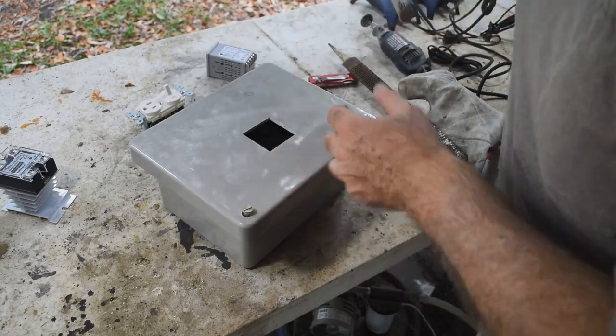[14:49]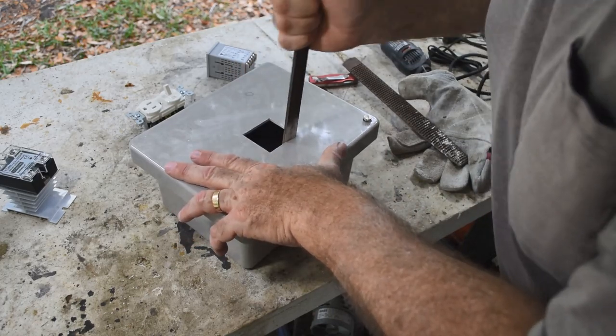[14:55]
And just as I figured, I made it a little bit small, but hey, that's better than making it too big. So I can probably just get a file or a rasp and work the sides out a little bit bigger so that it'll drop in. So let me go find one. Oh, it almost fits. It goes in side to side, but not quite front to back. Probably another 32nd of an inch needs to come out. But hey, that's fine. This file is cutting through the fiberglass really quick. It'll make short work of that last 32nd of an inch here.
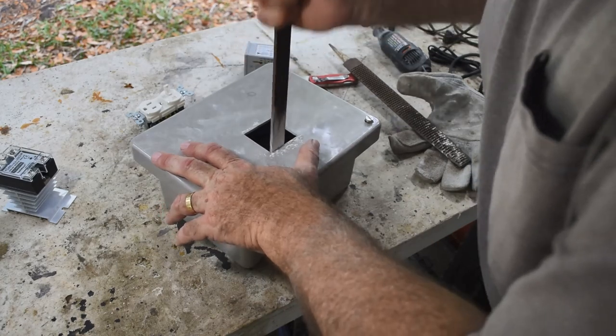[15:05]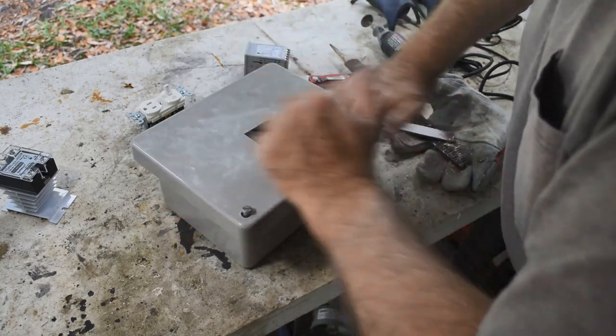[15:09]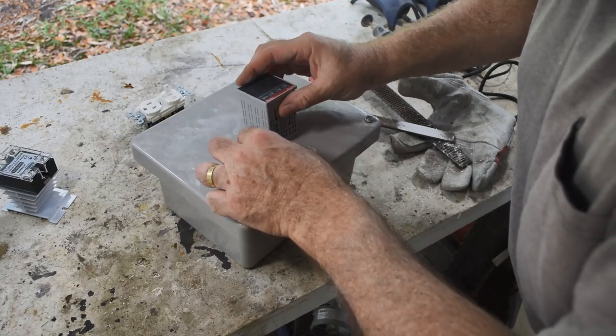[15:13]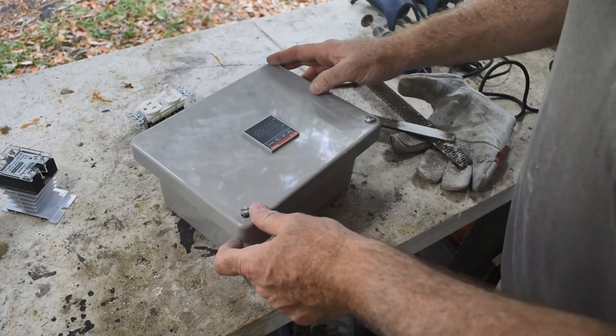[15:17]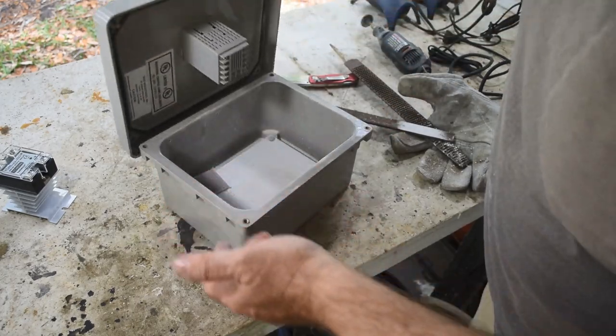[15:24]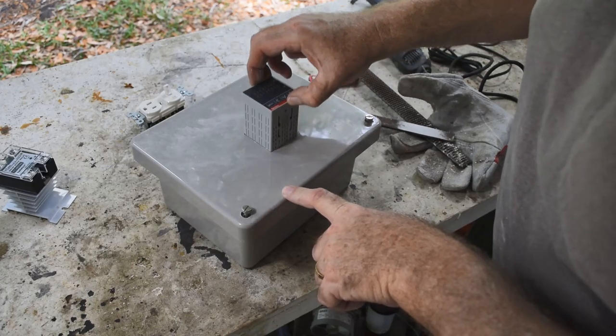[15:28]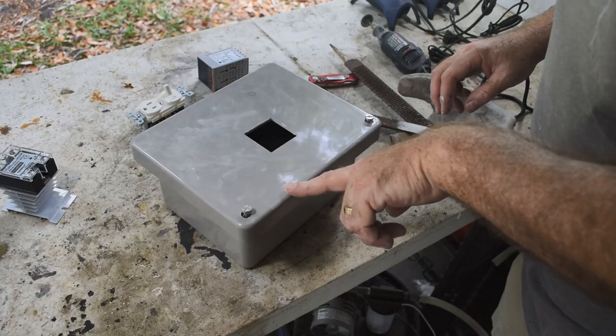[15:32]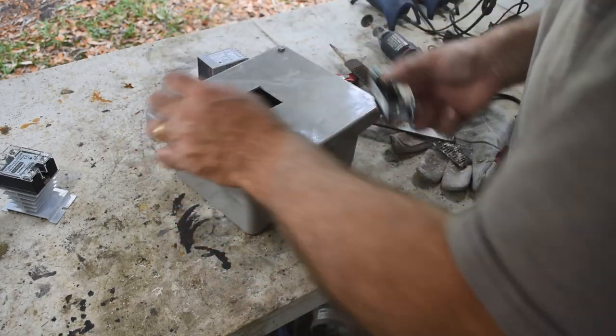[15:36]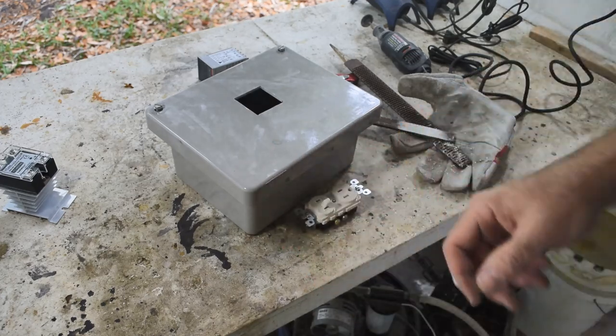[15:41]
Oh yeah, look at that. Perfect, absolutely perfect. Okay. Excellent. Oh, I gotta clean all the dust out of the inside of the box, but hey, I'm not done drilling holes in it yet, so I'll do that when I'm done. Let me see if I can get this outlet and switch mounted back here next. That'll be my next project.
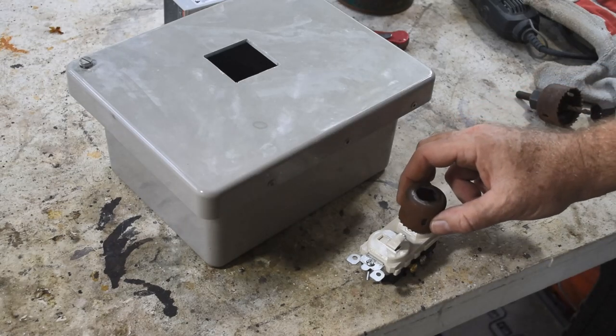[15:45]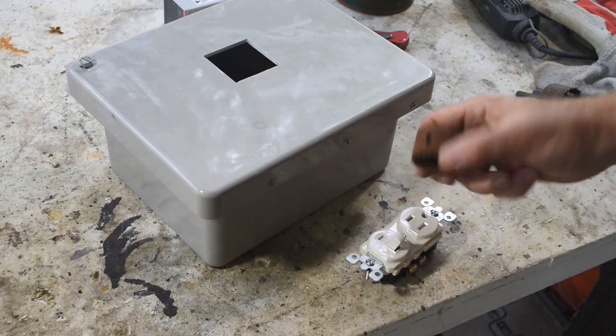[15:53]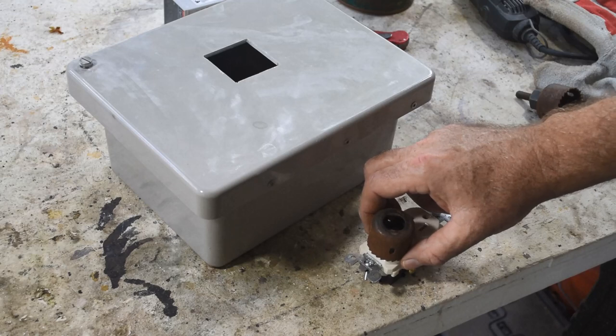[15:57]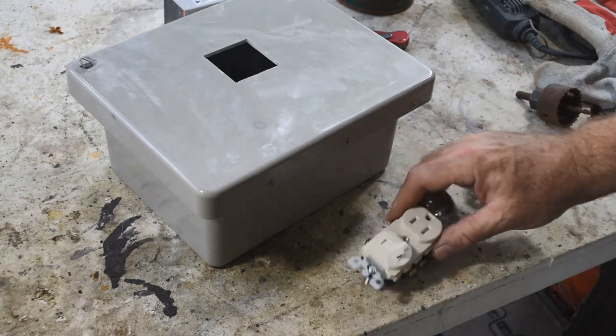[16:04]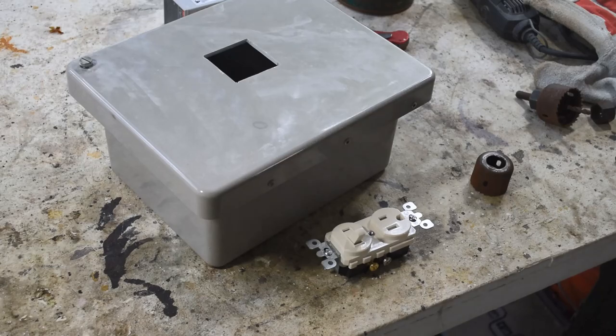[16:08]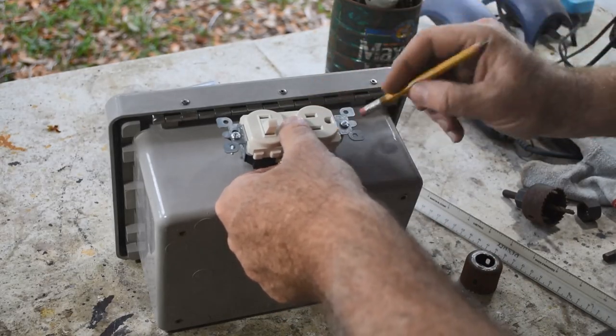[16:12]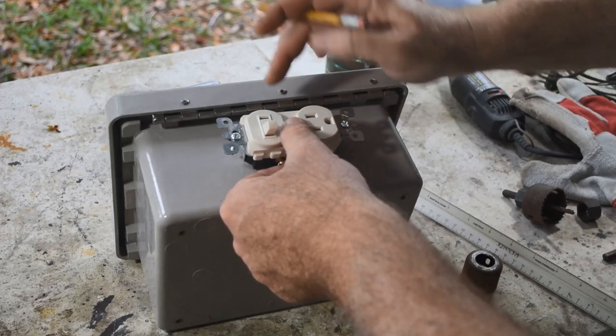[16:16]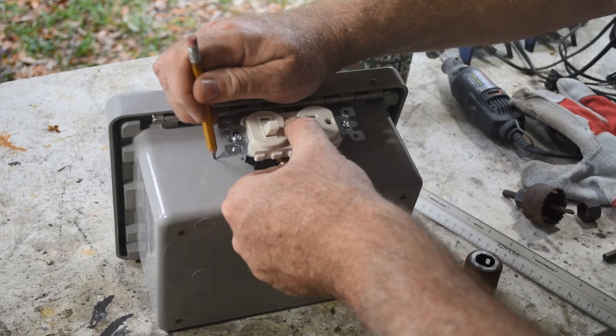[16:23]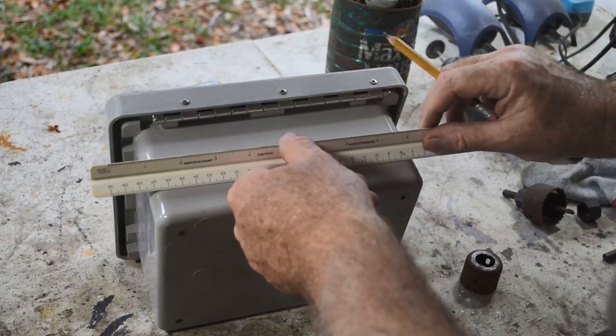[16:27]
So I'm thinking for this switch outlet combo, if I drill two circular holes the right distance apart, those are going to sit right in there nice. And this looks like the right diameter hole saw. So I just need to mark out the back where I want to drill and drill these two holes. And hopefully this will sit right in there perfectly. We'll see if I can do it. Okay, so I want this thing to sit in here right about here. Let me mark the center line here. Oops, I keep bumping it. The center line here. Draw a line across.
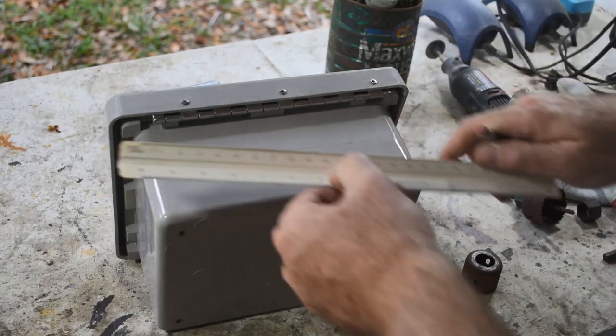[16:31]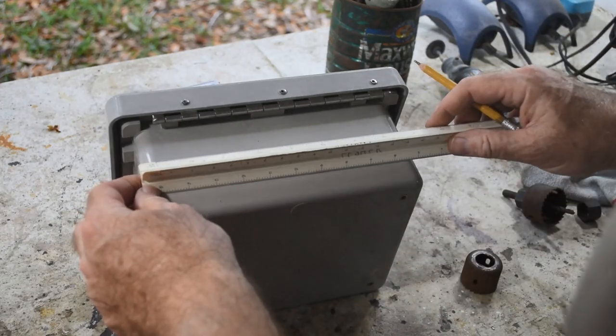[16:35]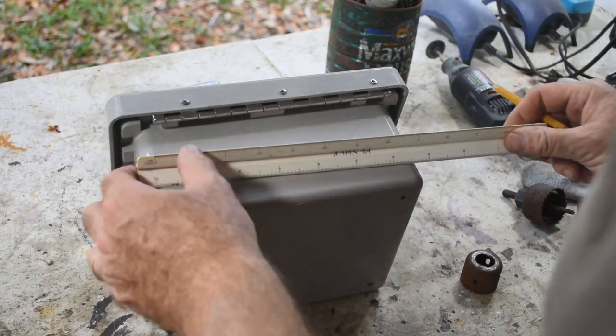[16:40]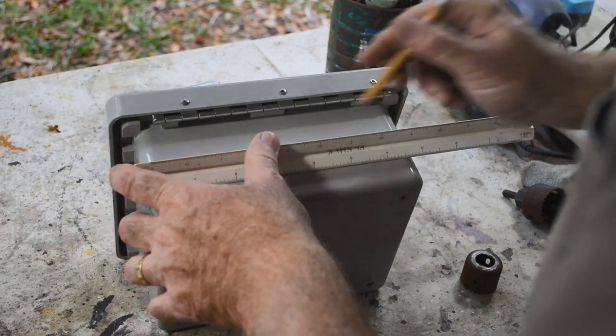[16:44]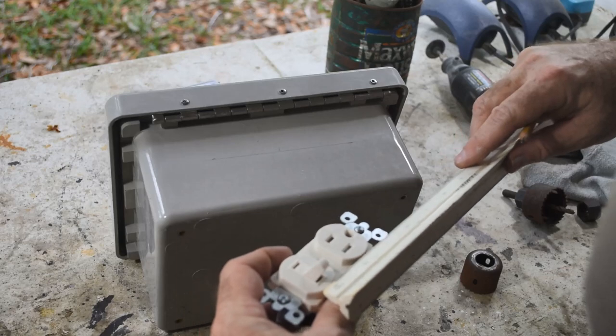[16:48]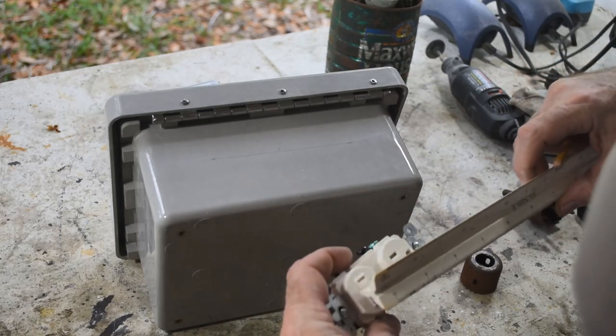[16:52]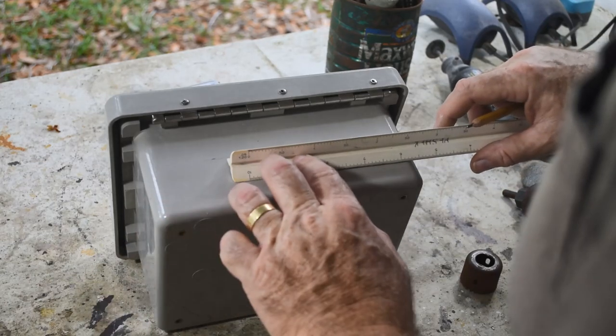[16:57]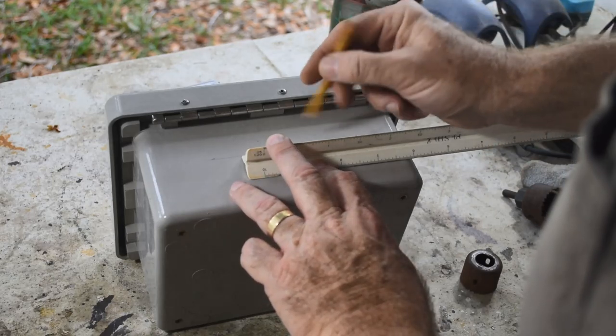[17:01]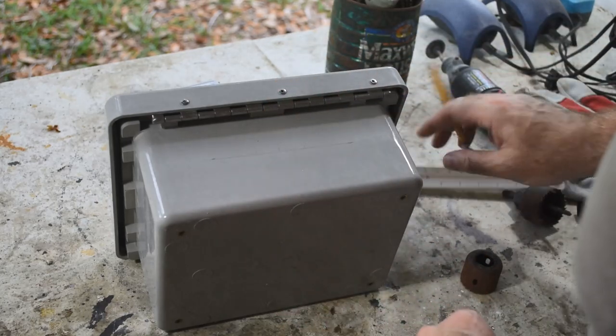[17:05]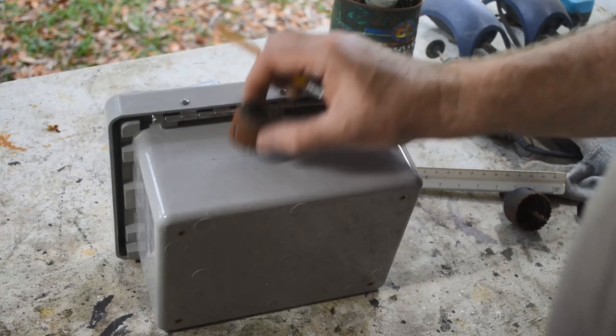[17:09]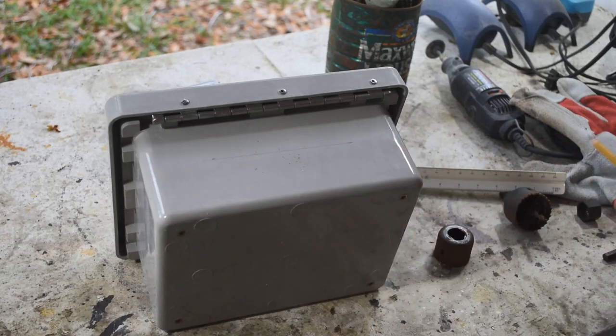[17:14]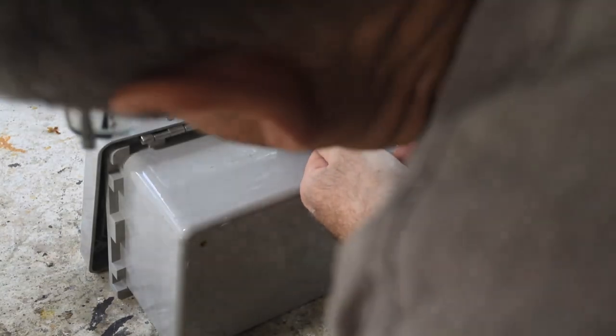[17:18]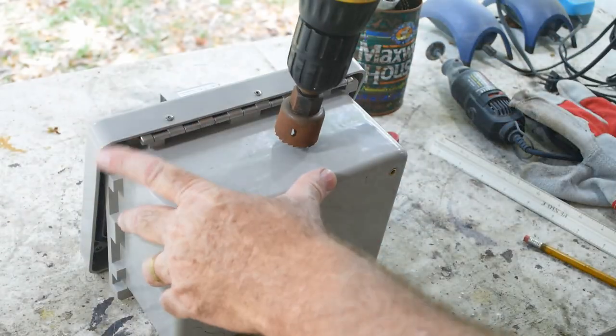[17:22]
So, let's find the middle of this thing. Here, and it looks like these are about an inch and a half on center. These circles that these would fit in. So, inch and a half on center. So if I drill two holes, centered up like that, that should do it. We'll see how close I am. So I'm thinking if my drill bit doesn't walk too much, this should work pretty well.
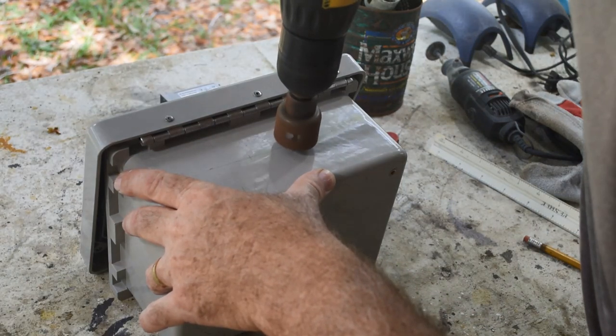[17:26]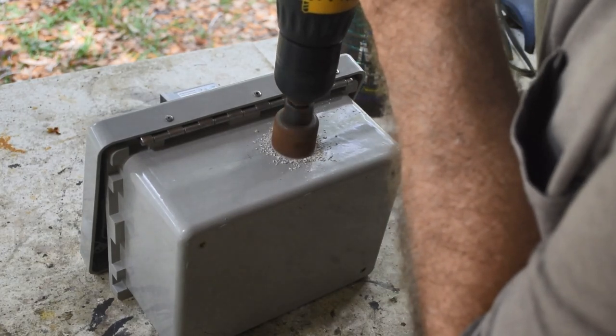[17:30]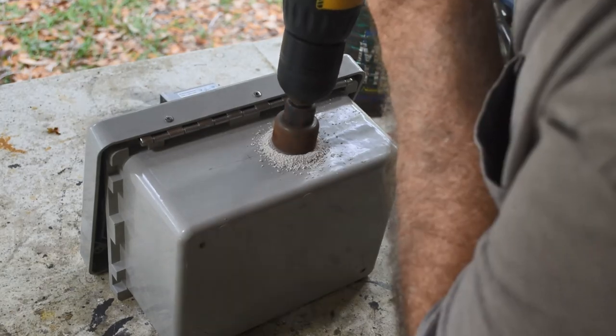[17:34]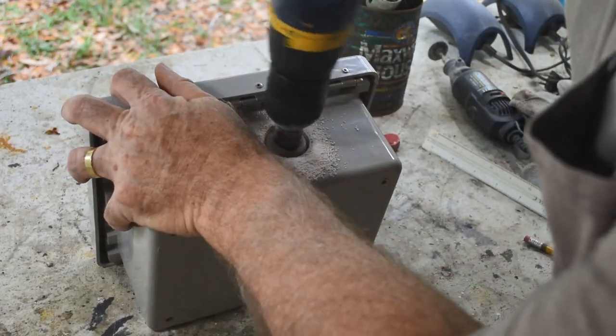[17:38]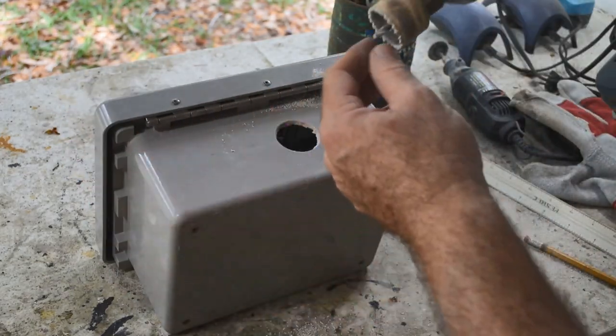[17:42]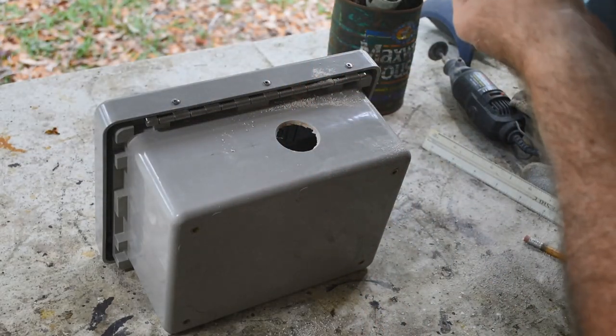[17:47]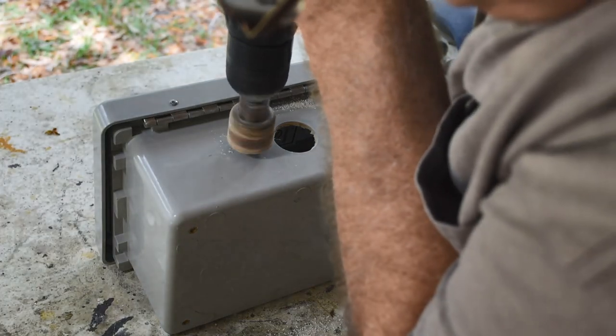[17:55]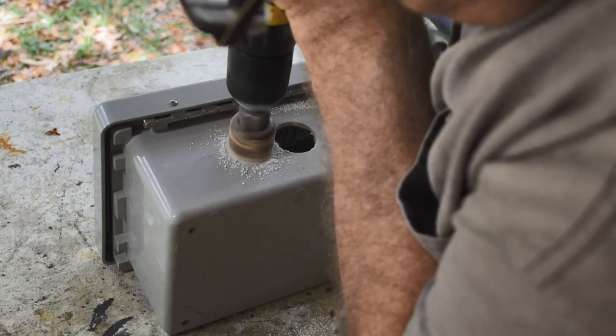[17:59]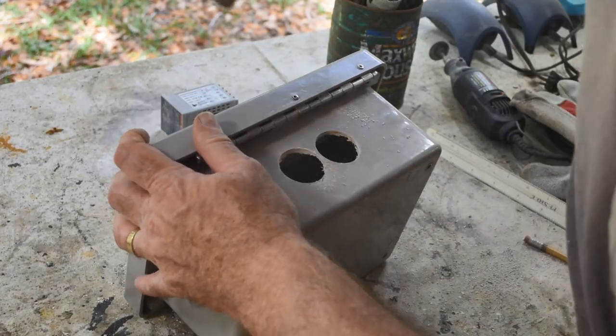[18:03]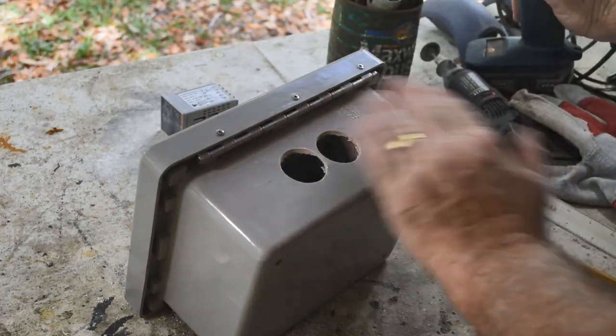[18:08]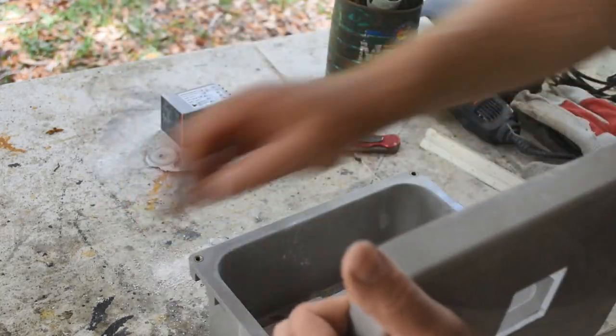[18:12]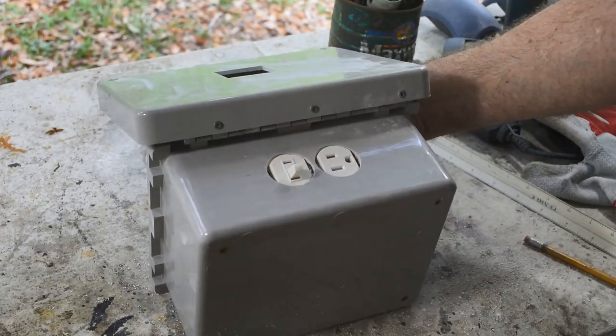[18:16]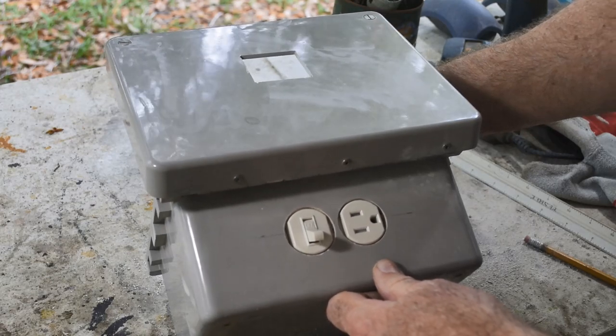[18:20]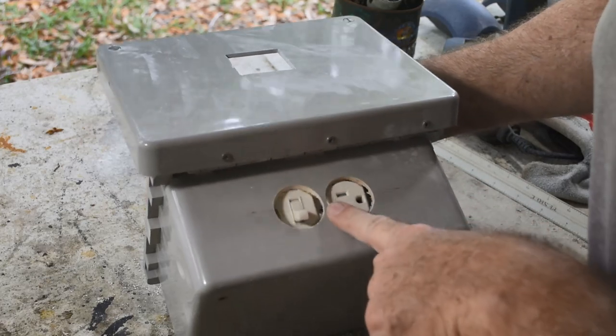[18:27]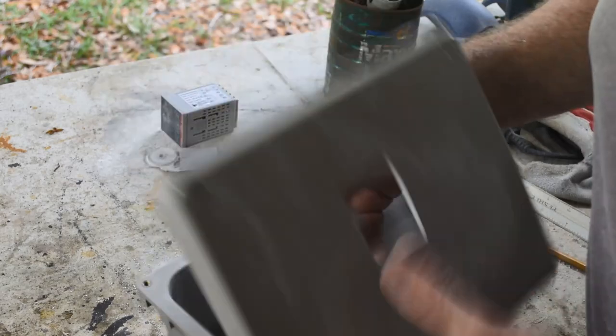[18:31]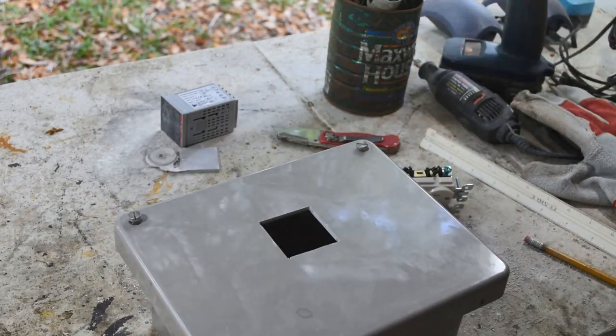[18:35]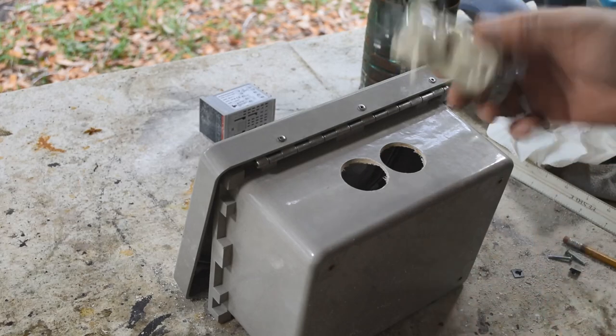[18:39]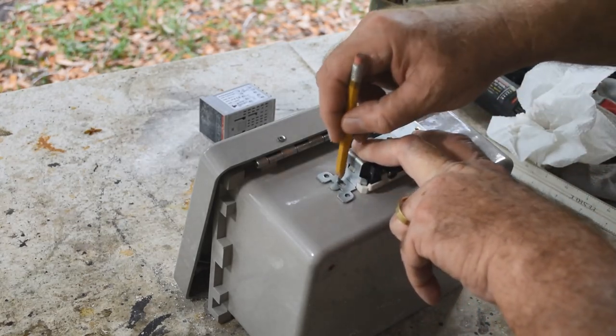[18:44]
There's one. Tighten it down again. Now let's see how I did. Look at that! Look at that! Sometimes I even amaze myself. Alright, I'm going to have to drill some holes for the mounting ears. There's not enough meat left in the center for the central hole. So, I'll hold it on with the mounting ears out here. Alright, cool. This thing's coming together. Pretty happy with that. Well, I can just stick this in this way and mark where I need to drill the holes for mounting it.
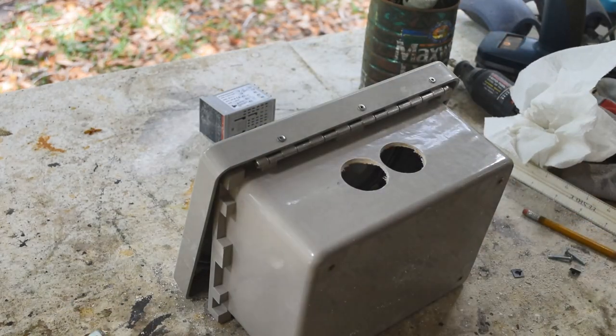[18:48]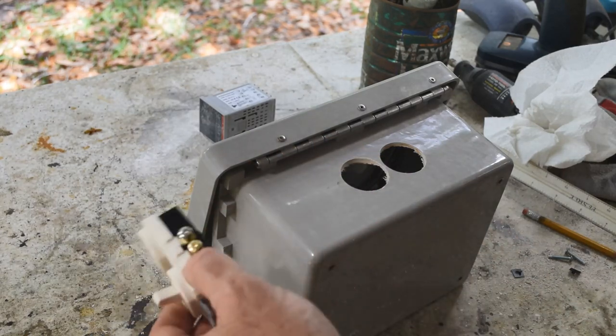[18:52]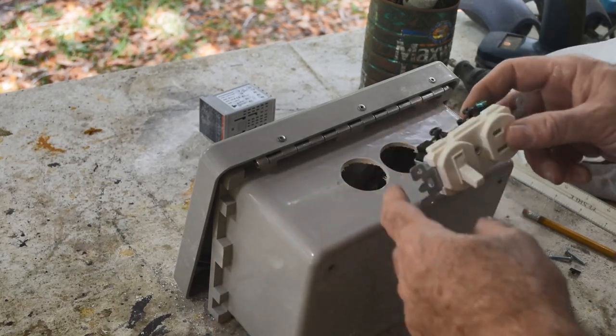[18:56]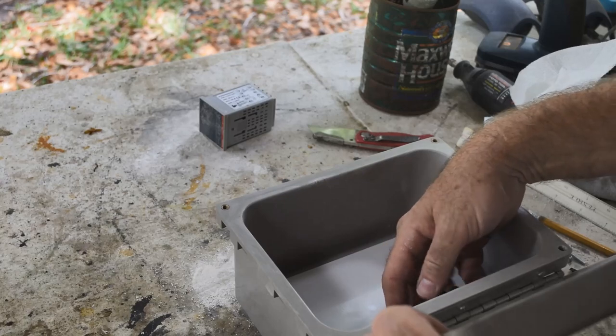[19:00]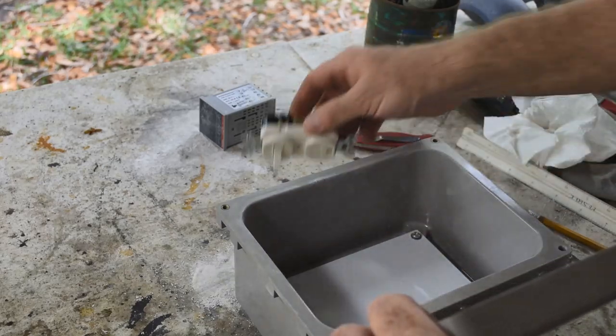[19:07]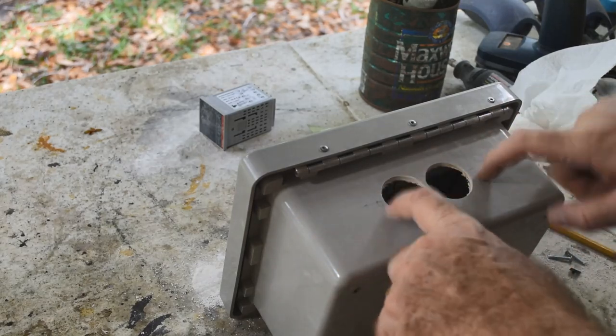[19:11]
Easy peasy. I'll just drill them out and bolt that in with some screws, although I may leave it out for now until after I have it wired. Might be easier to wire with it out of the box. Yeah, I won't be able to get to the screws on the bottom when it's mounted. So I'll wire this up, then mount it in the box. So I will drill the holes when I get a chance, so they'll be ready to go, and find some mounting screws.
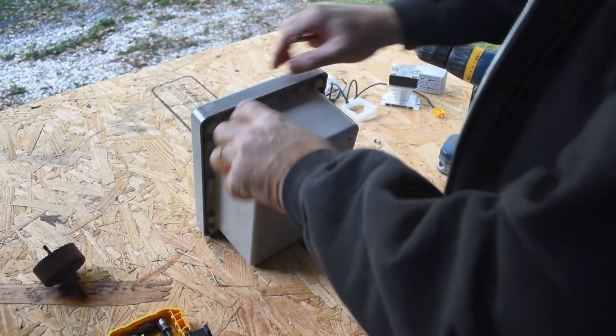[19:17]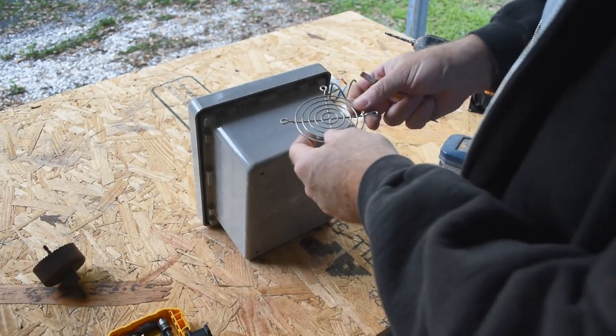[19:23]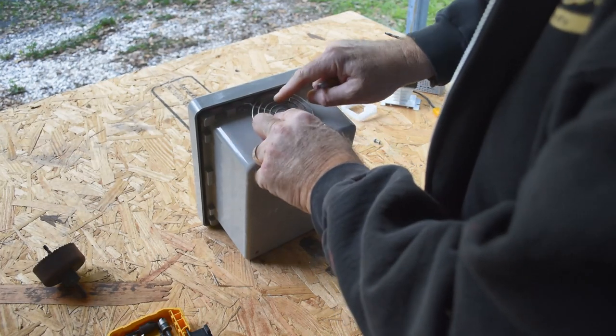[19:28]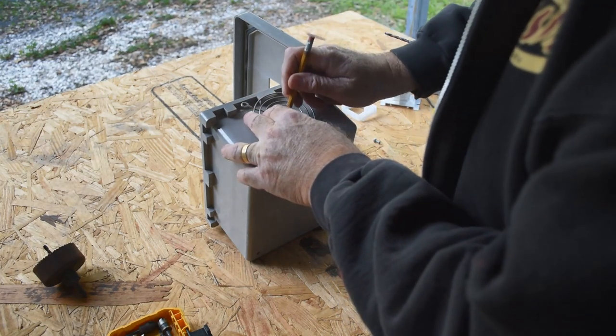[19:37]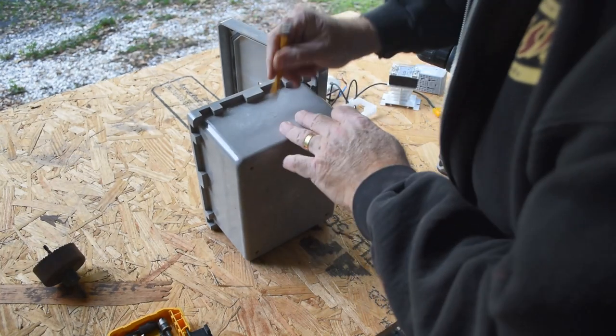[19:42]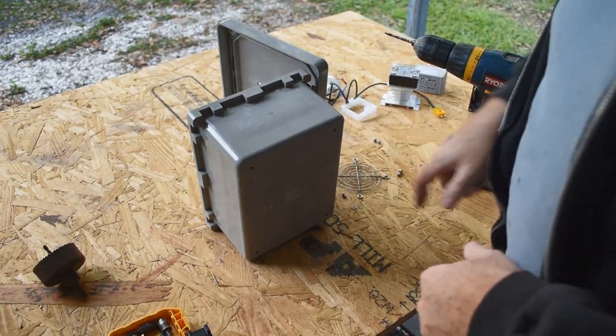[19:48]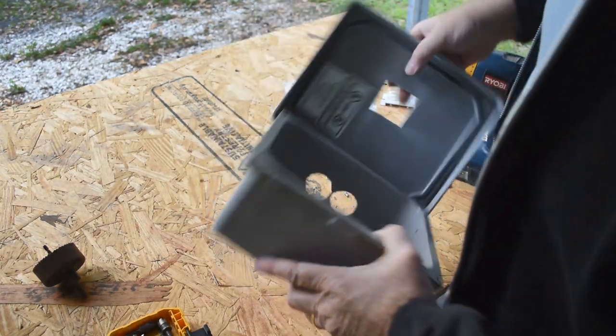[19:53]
Well, I drilled a couple of mounting holes for the fan based on where it sits inside the box. And then I drilled out the rivets that held the fan guard in place. I'm gonna have to modify it because there's this thing right here, but I can do that with just some wire cutters. But this will give me an idea of where I need to center the hole to drill out for the fan. Right about there. Okay, so let me get my big hole saw in, we'll drill that out. And then I will drill a hole on the other side as a vent hole.
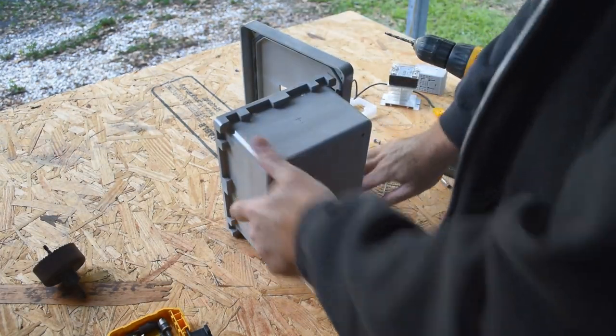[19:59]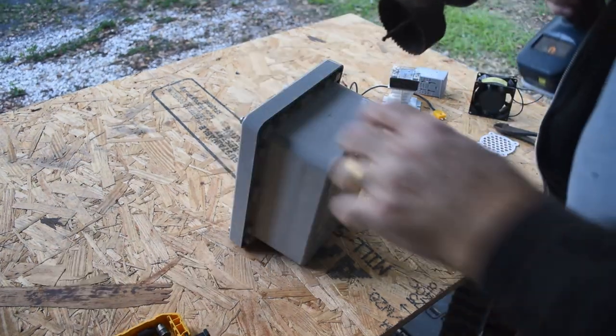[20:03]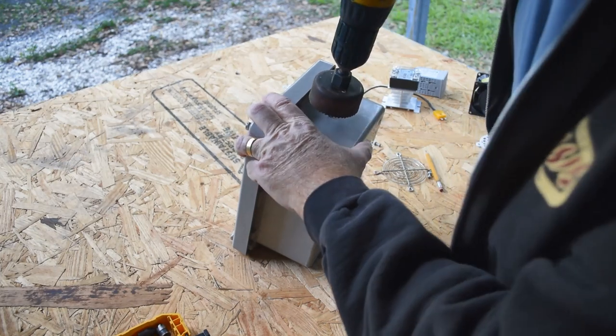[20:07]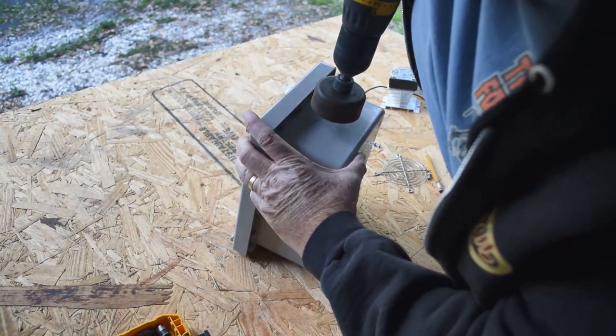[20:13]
And I will need another fan guard. So we'll cross that bridge when we come to it. This hole saw is actually a little undersized, but I think we'll get plenty of airflow through here. I'm not too worried about it.
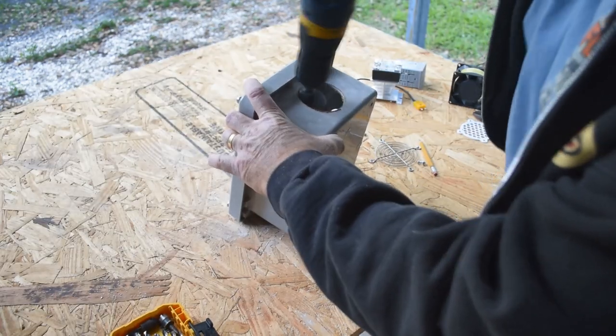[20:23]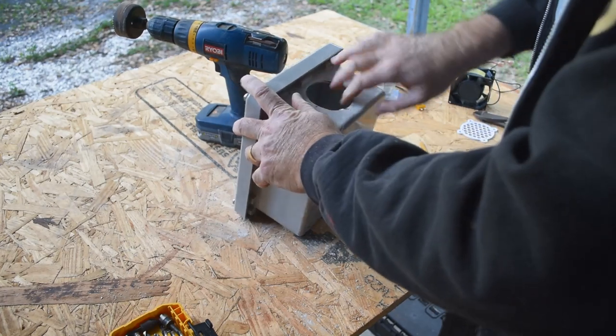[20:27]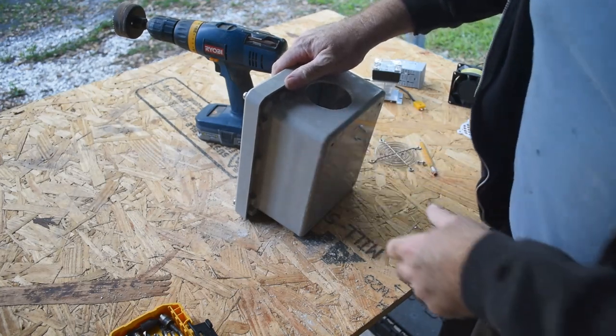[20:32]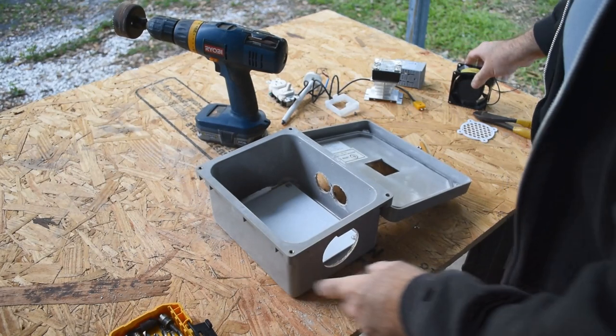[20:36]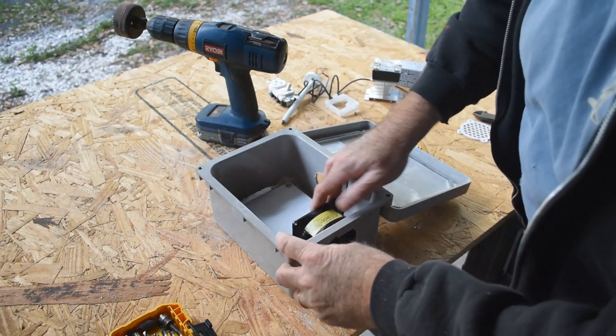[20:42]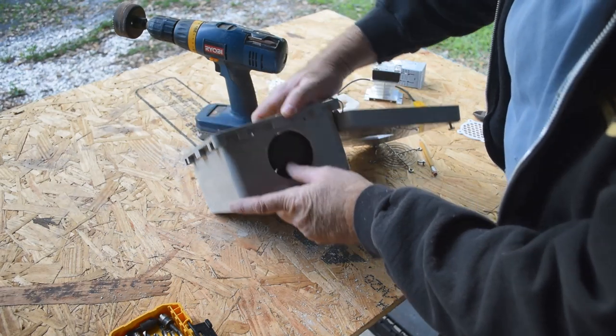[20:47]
There we go. Pretty good. A little bit ragged on the inside, on the inside where it doesn't show. Let's see, airflow direction. Airflow that away. Yep. That's gonna work. The mounting holes line up. All right.
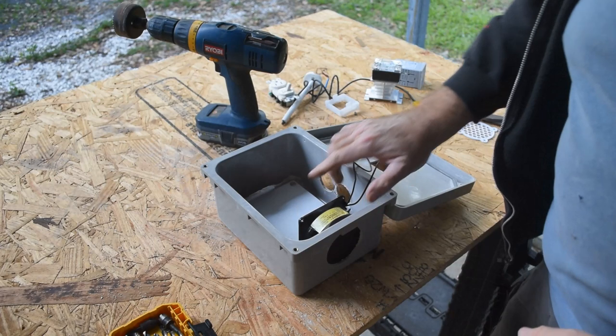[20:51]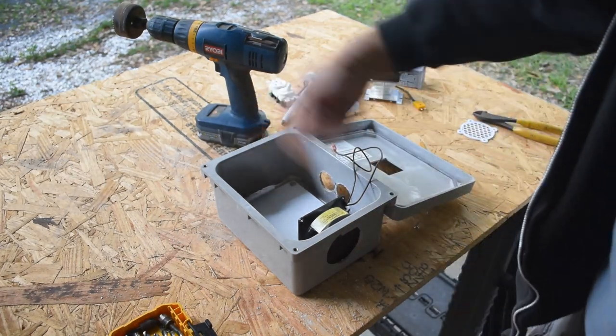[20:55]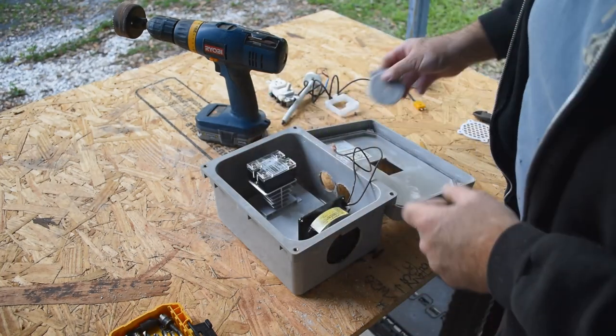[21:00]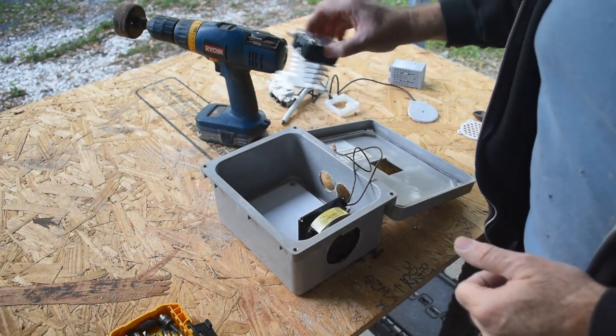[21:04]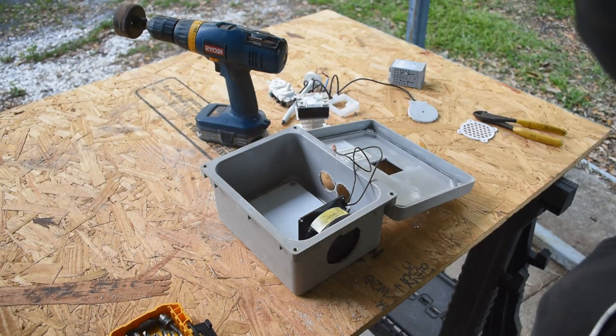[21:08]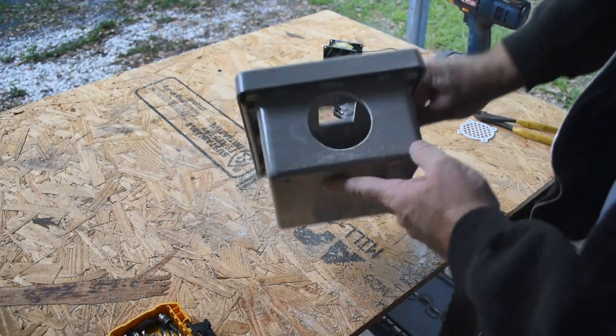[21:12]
So, yep, okay, cool. So I'll just need to drill another hole in this side, and then we can have cross ventilation. I'll mount the relay over here. It can be in the cool air coming in. Perfect. I guess it's gonna work great. So let me get that other hole drilled and then move on to something else. All right, there's the second hole. You can see right through it now.
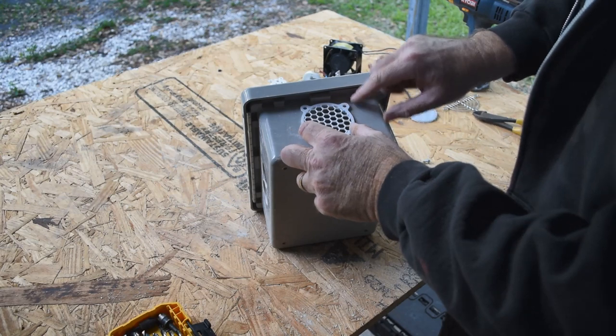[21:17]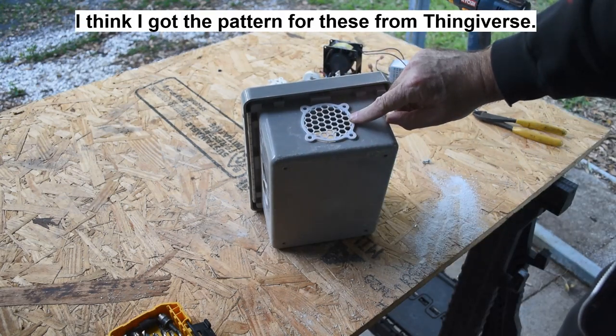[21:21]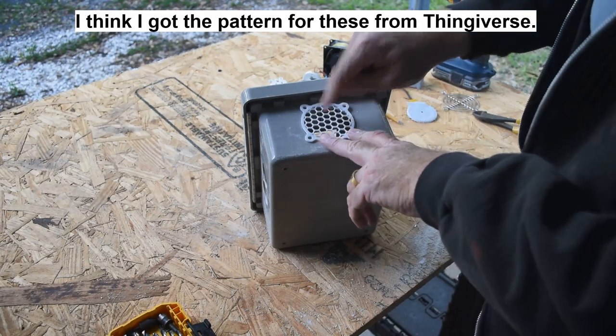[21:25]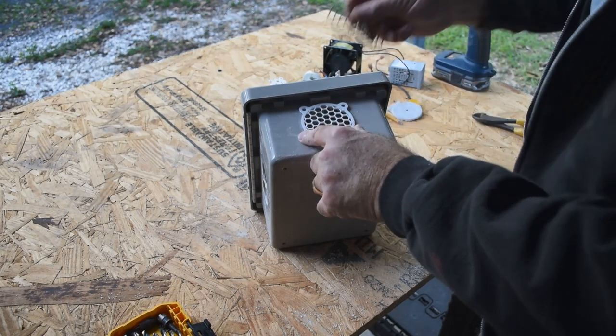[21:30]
And I had some fan shrouds that I 3D printed a while back for another project. And I printed several extras thinking that they would come in handy and just threw them in my junk box. So, yep, that can go over the inlet. And the one that came with the fan can go over the outlet. All right, I think that'll work.
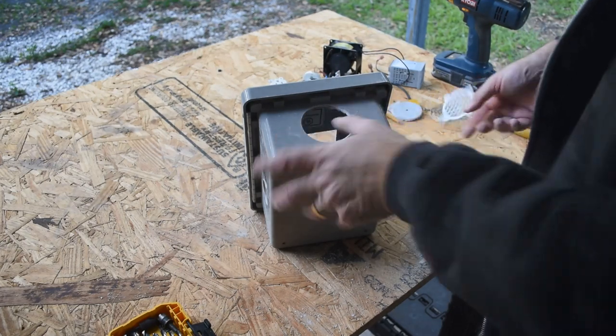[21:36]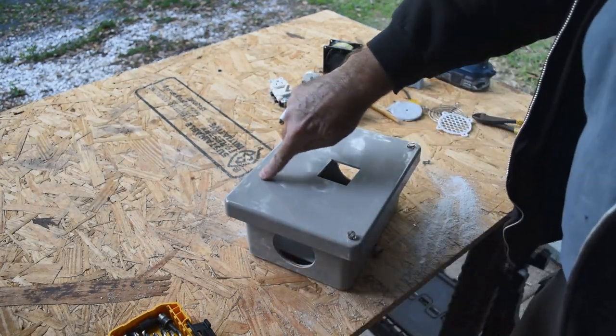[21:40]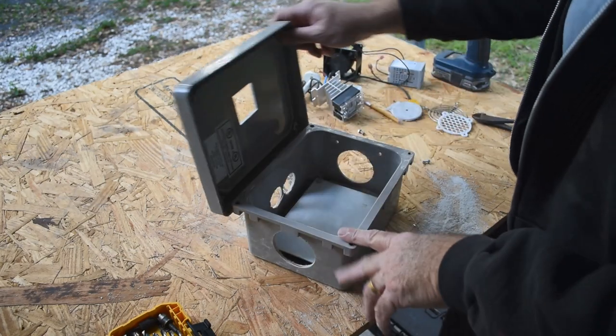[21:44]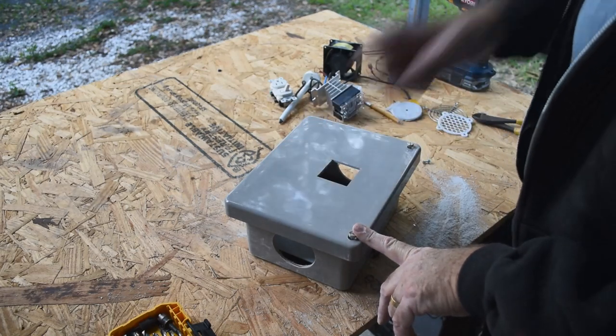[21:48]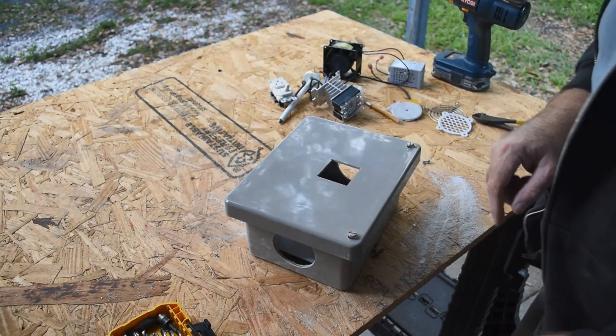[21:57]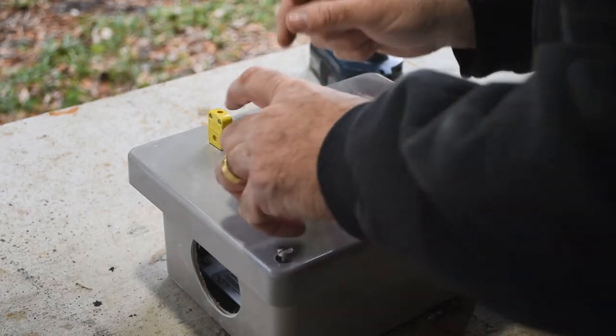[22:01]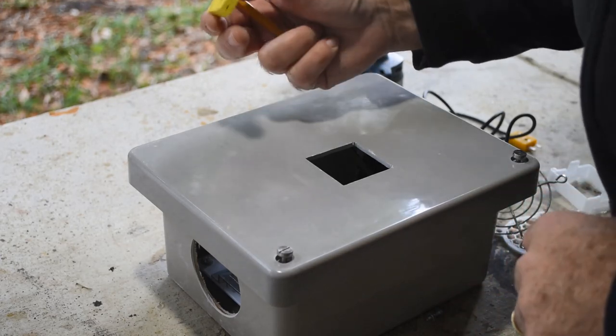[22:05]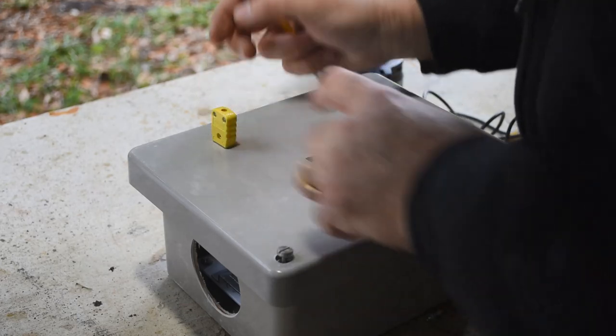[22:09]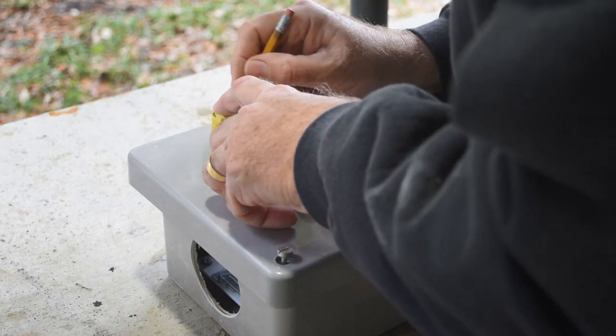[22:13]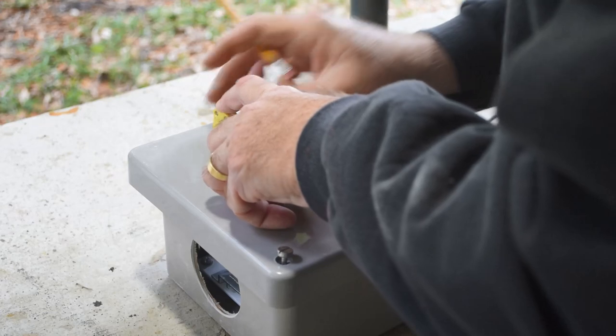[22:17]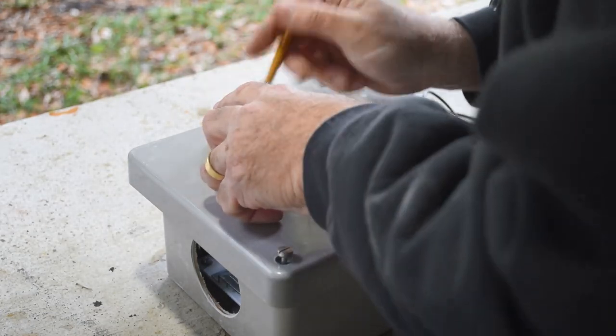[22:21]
I think all I have left to do is cut out where I want to put the connector for the thermocouple. So I need to find a type K connector, cut out a hole for it, and then epoxy it in place. So let me find a connector, then I'll cut the hole. All right, so I think the last hole I need to drill in this thing is for the thermocouple connector, and I found a type K connector here. And yeah, this is what I sketched out just by memory, not too bad, but we'll get it just right.
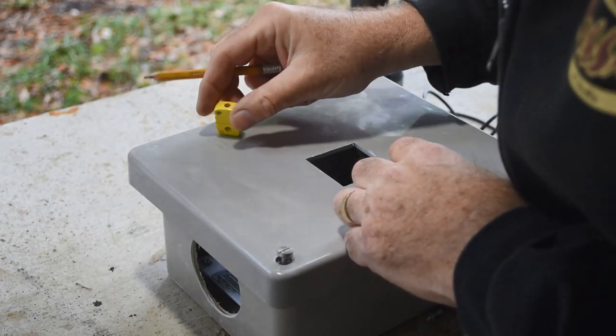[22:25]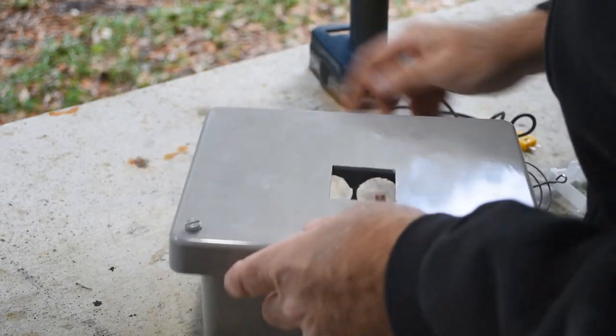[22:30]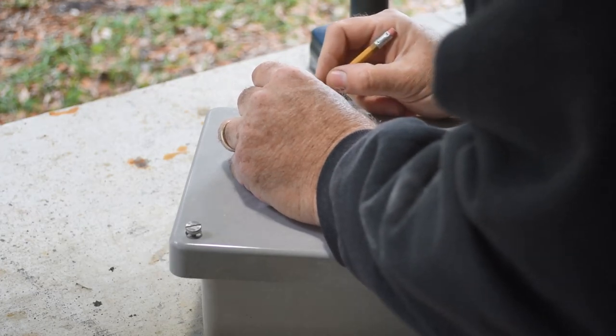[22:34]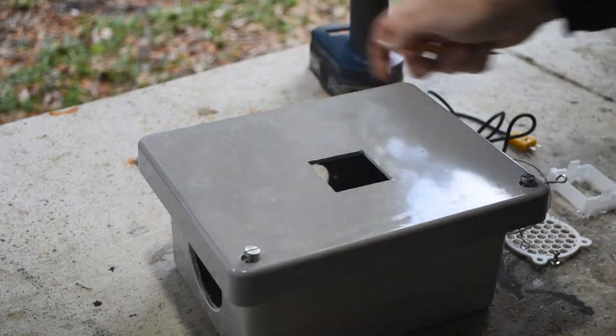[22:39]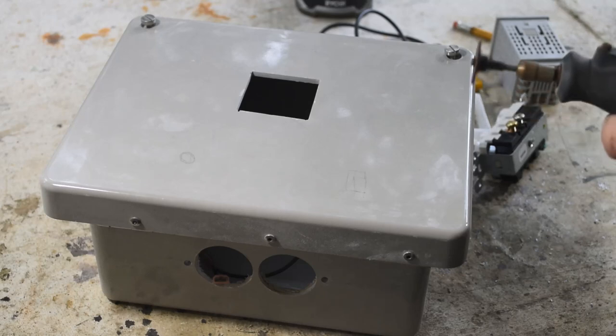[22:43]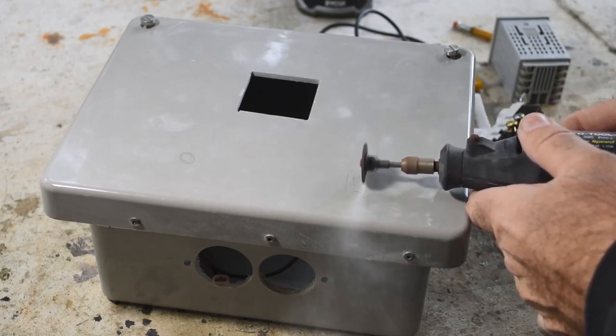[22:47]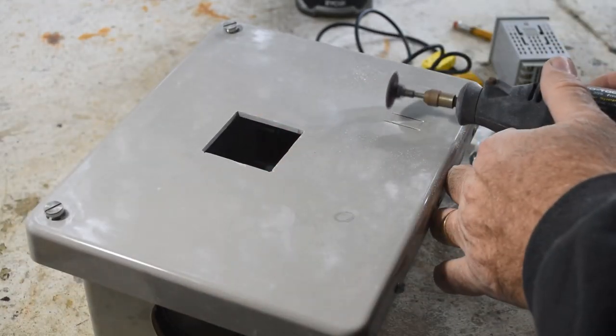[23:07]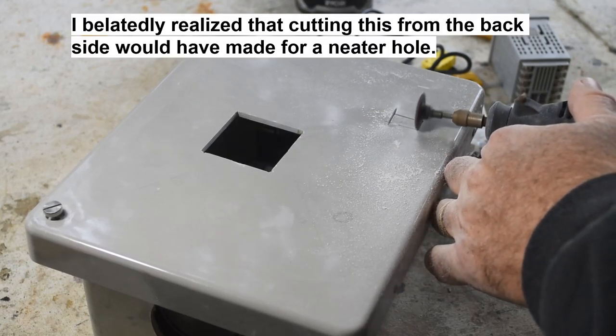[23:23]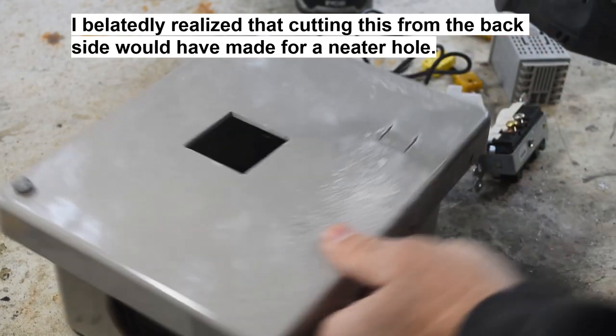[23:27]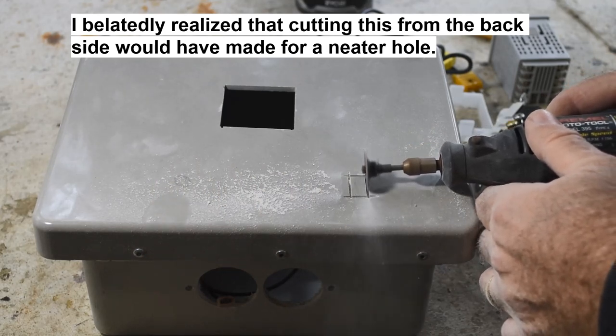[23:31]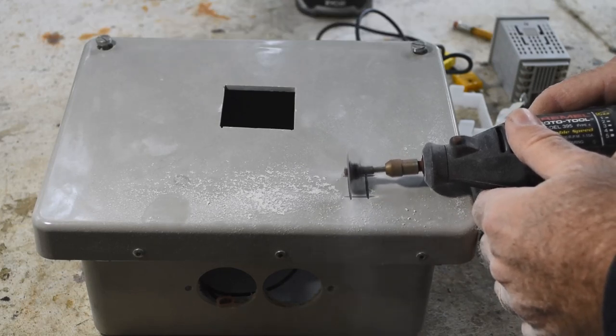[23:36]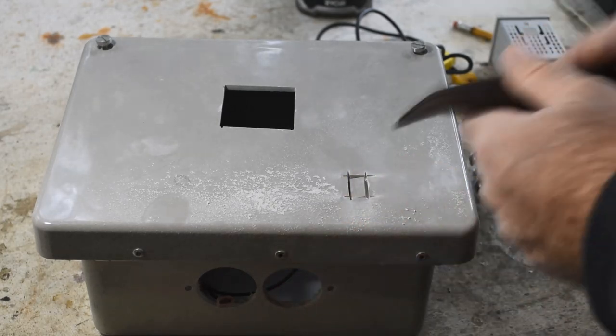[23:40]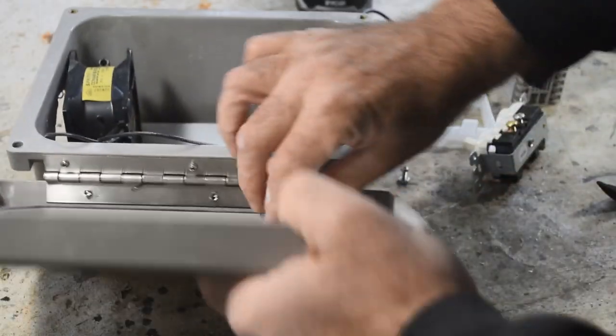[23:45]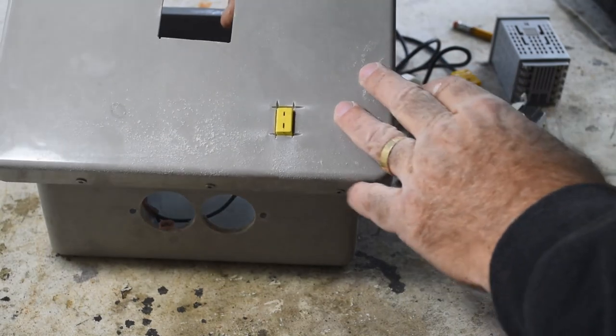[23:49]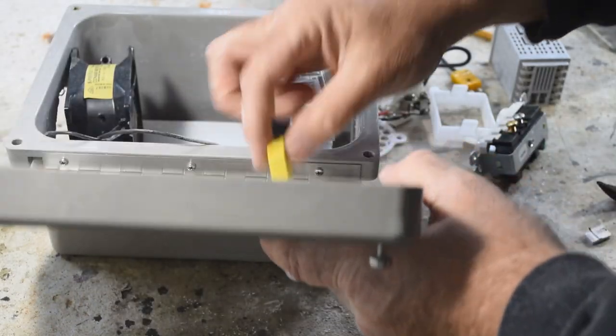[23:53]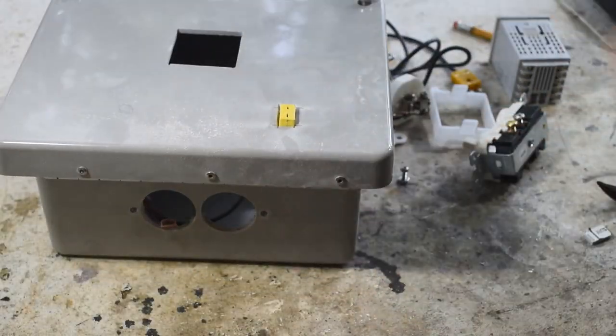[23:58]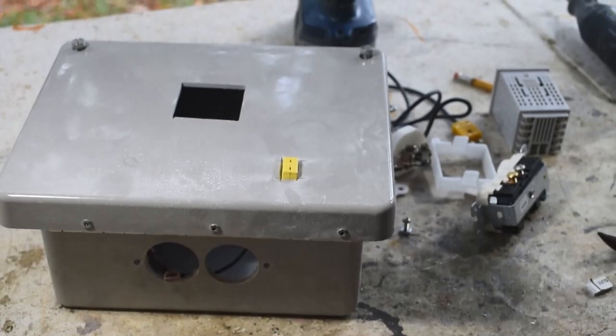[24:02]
Need to be a little fatter. All right, let me get the Dremel out again, and I will put in this hole, and we'll get that mounted too. Yep, there we go. That'll work. All right, I'll just have to epoxy that in. And hey, presto. We got ourselves a connector for the thermocouple.
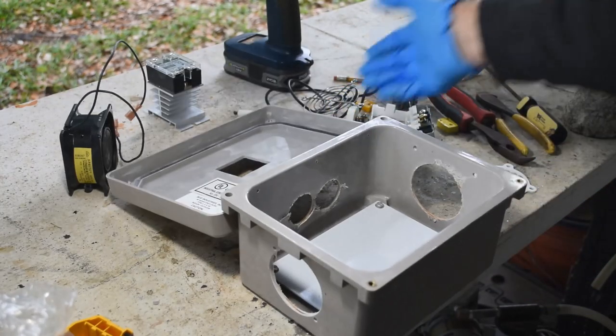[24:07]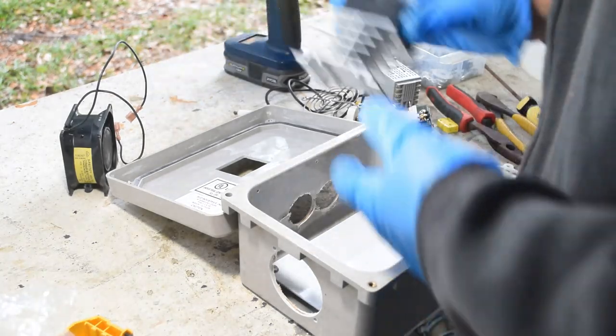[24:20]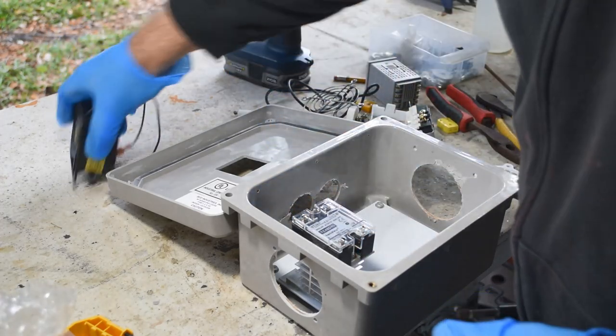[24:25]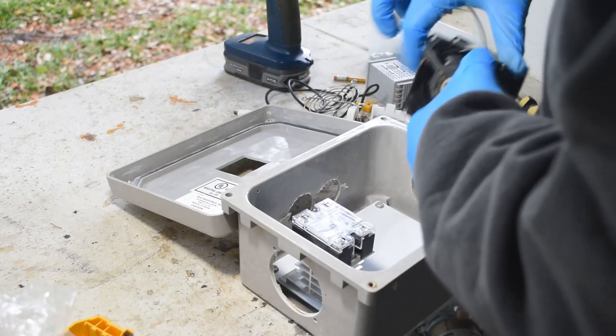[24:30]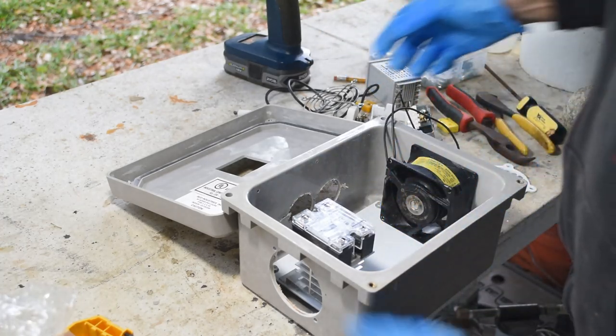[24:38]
Okay, all the holes I need are drilled in the box now. It's just a matter of mounting all this stuff in here and wiring it all together. So let me get started on that and see how it goes. I think I'm going to start with mounting the relay over here and the fan, mindful of the airflow direction, over here. I don't think they're going to be too much in the way of other stuff, so I can probably mount them.
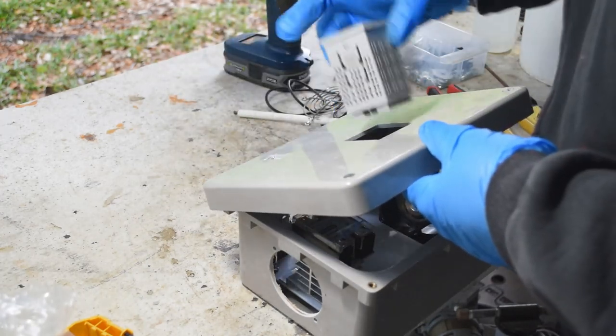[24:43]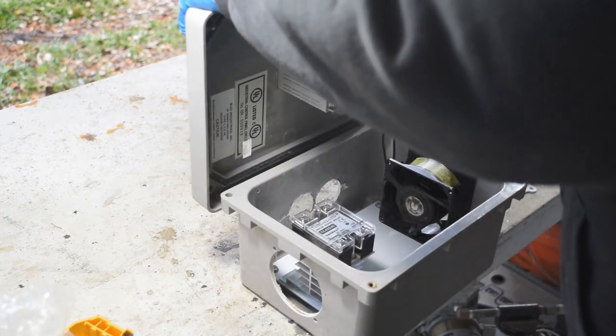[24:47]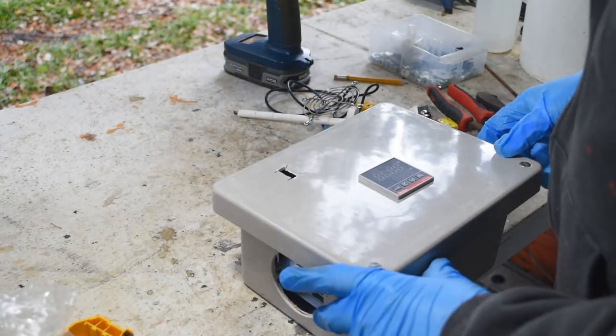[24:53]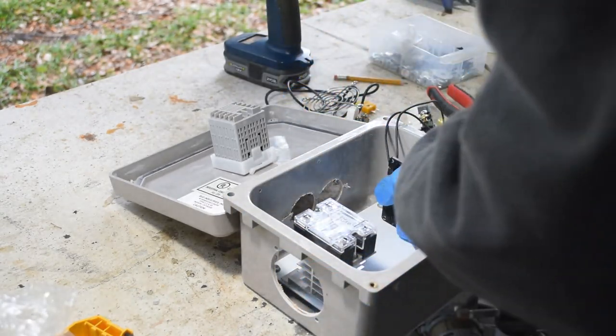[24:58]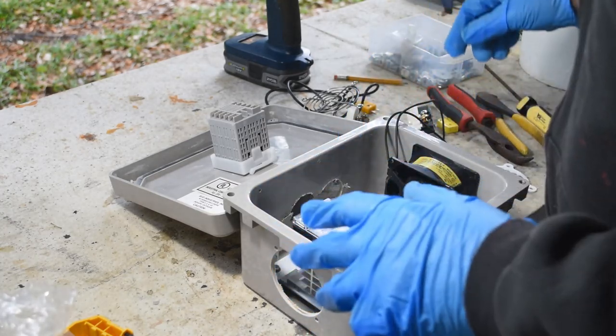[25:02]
Mounting this is going to be dead easy. This just drops right in this hole like this, and this keeper goes on like that, and there, that's mounted. Well, that was easy. So let me get the fan and the relay screwed in, and then I'll work on some other stuff.
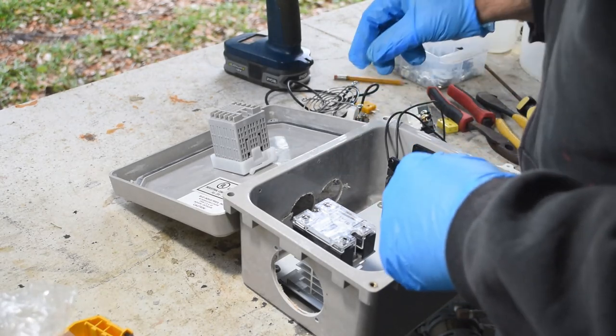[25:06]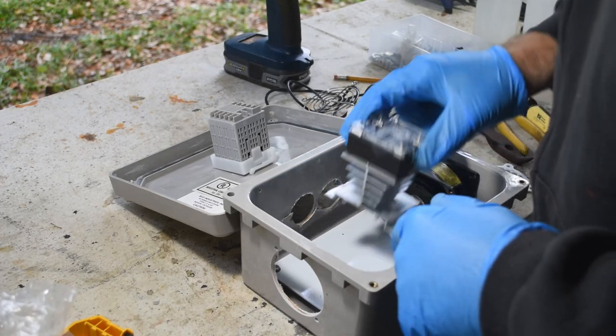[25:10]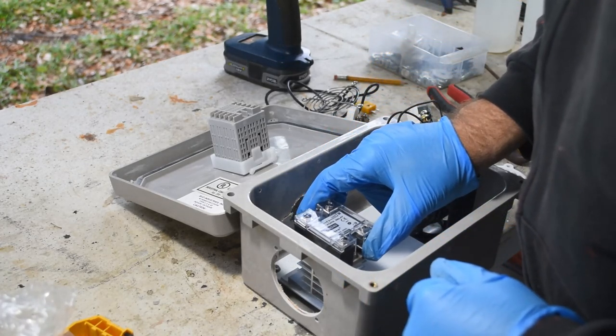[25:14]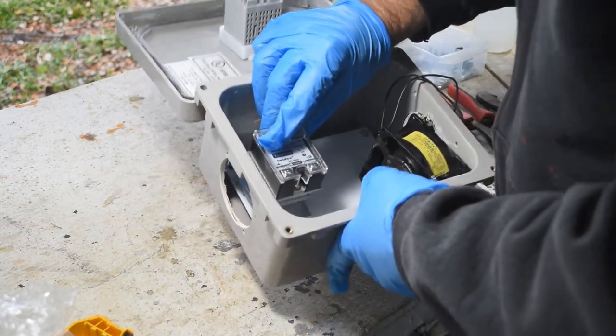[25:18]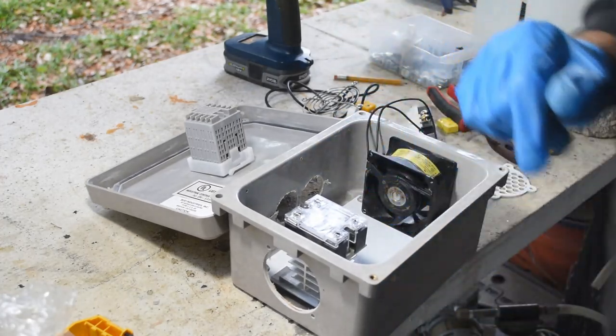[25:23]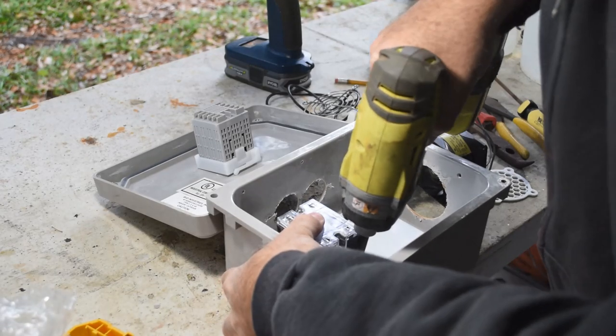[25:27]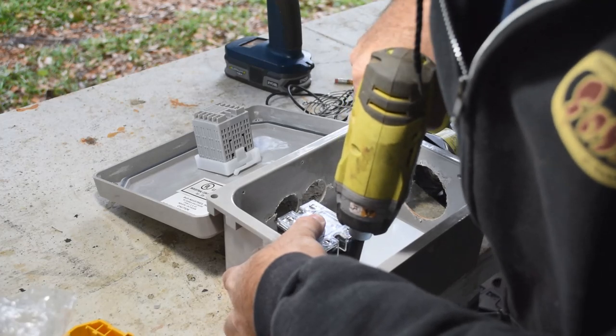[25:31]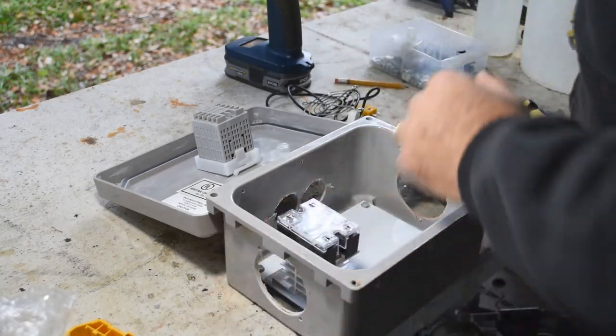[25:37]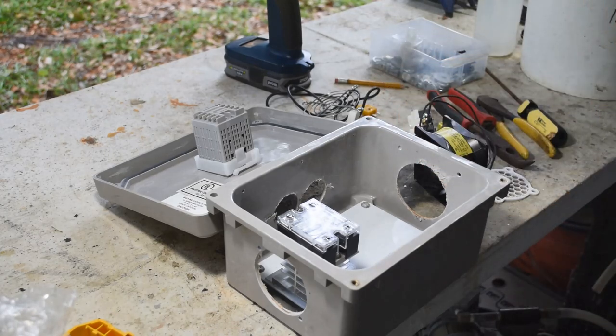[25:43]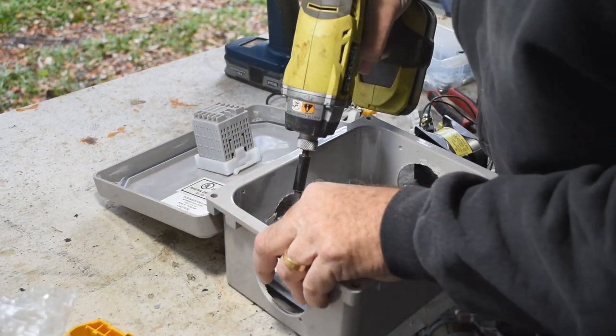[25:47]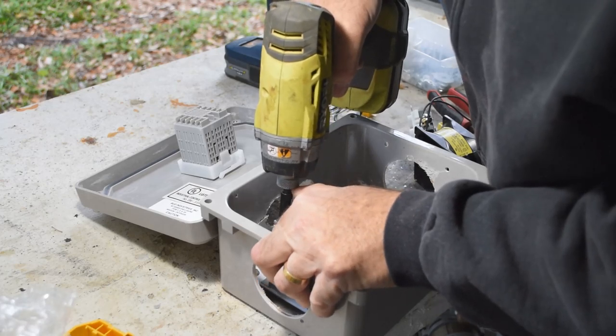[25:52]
I've drilled holes for the fan, and I have some screws here. I think for the relay, what I'll do is go with self-drilling screws into the steel mounting plate in the bottom of the box to hold it in place. I think that's what I'll do. Okay. Yeah, these self-drilling screws are going to mount this nice. Although now I am filling the inside of the box with metal shards as the screws go in, so I'll have to clean those out so I don't wind up with a short circuit.
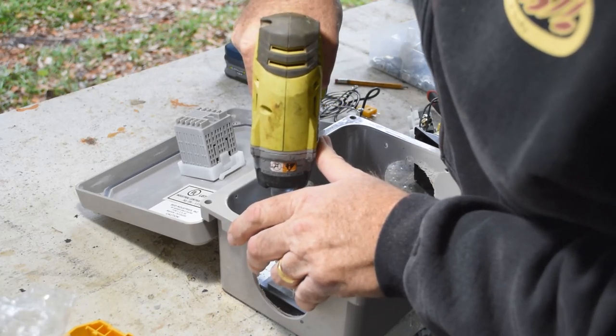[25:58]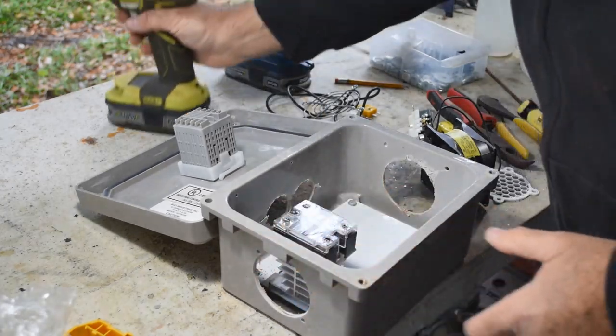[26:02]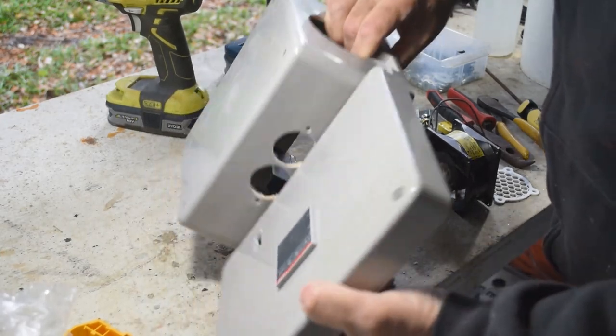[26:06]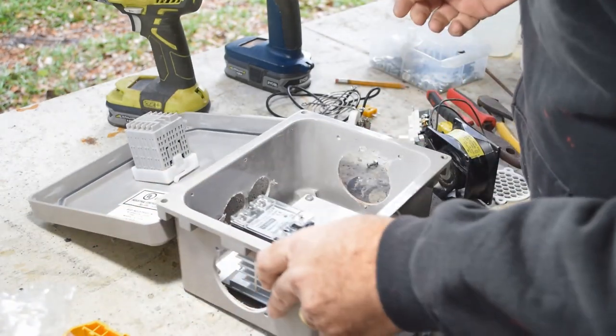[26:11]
But there's the relay mounted. Let's see if I can get those metal shards out of there. All right. Next, for the fan.
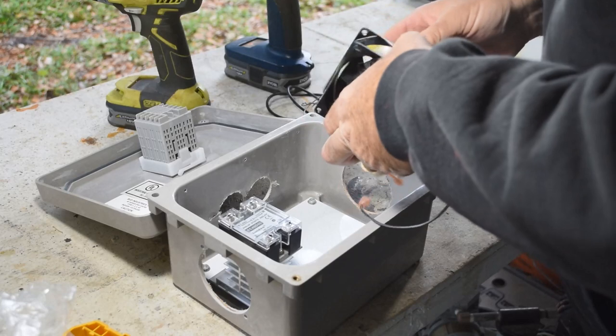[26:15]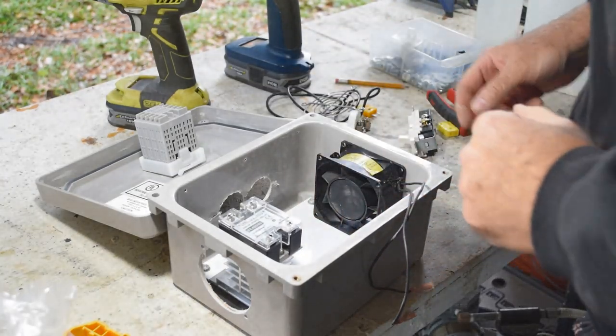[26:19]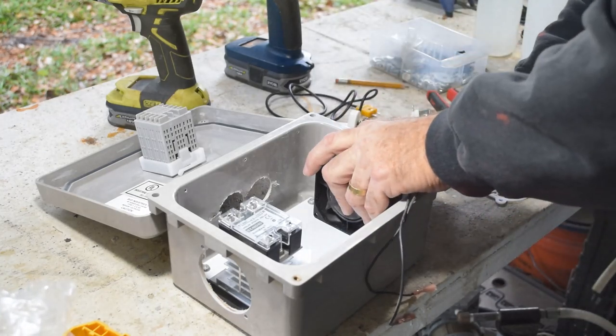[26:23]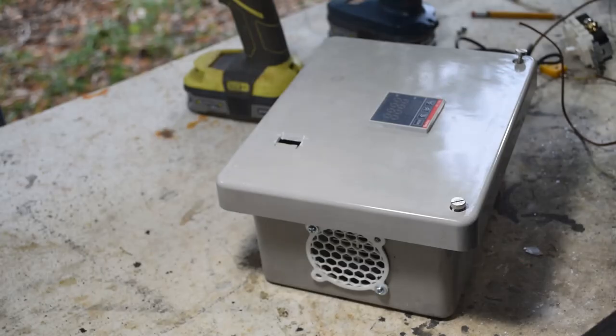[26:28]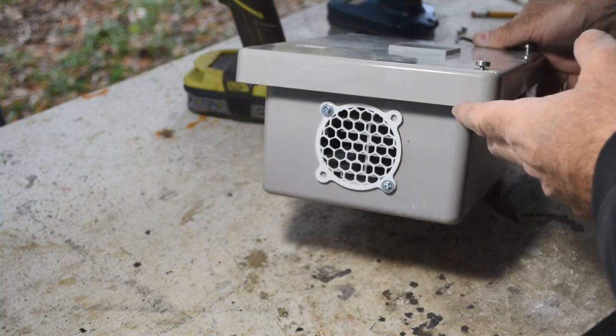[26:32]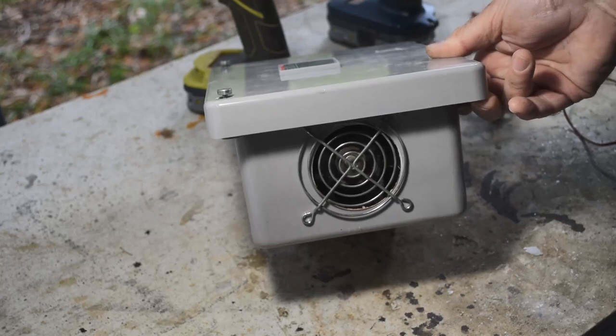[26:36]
Like so. Just gonna hold that in with a couple of screws, and they'll go through and hold on the guard on the outside. That's my plan. Well, it's starting to look like something, if I do say so myself. Got the 3D printed fan guard on that side. Got the original fan guard over here.
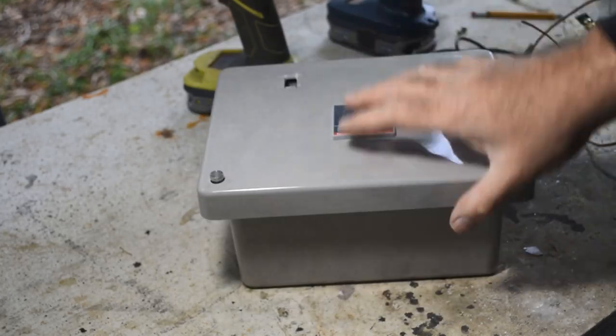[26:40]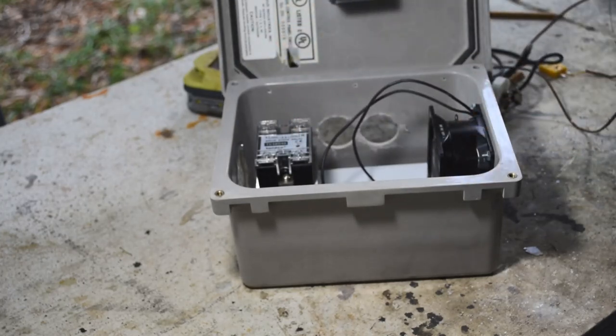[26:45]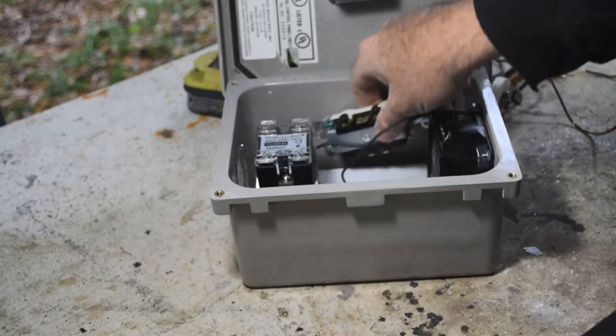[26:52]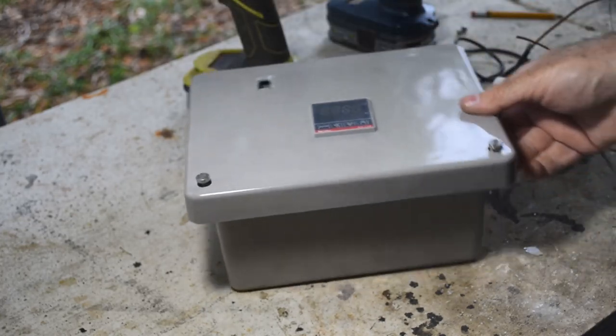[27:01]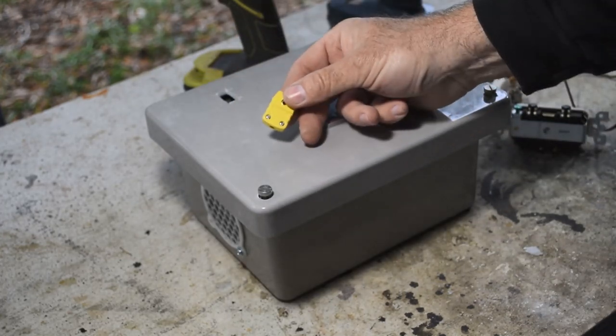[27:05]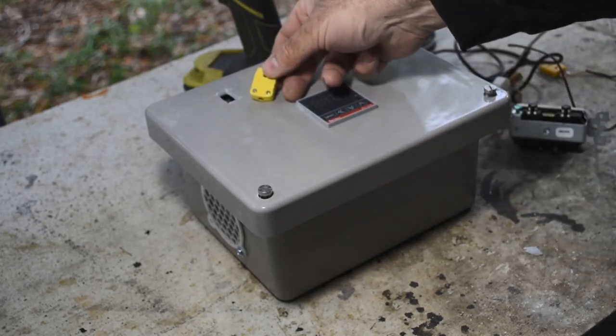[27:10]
Controller is mounted. Relays mounted, fans mounted. I think I said earlier that I'm going to wait to mount this until after I have wires on it and everything wired up, because it's going to be very difficult to get to the screws on the bottom otherwise. So I'll put that in later. Right now I still need to glue this in, but I need to put wires on it first, because I won't be able to get wires on it after I glue this in.
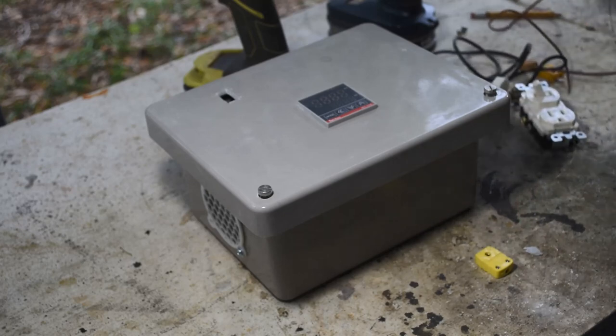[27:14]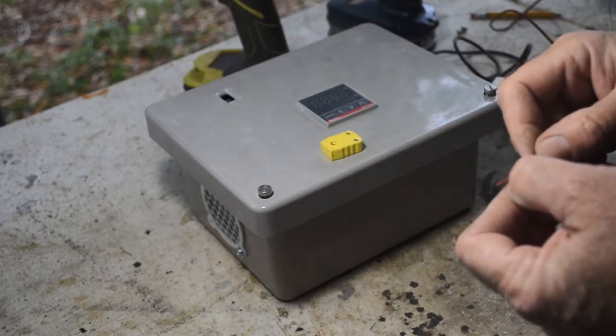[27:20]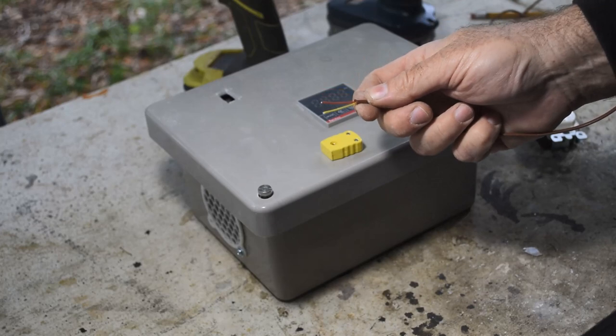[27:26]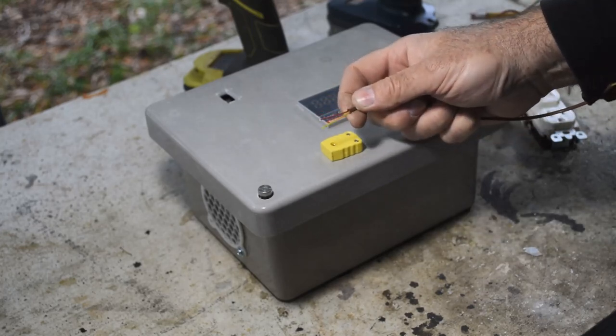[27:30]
So I've got a little piece of thermocouple wire here. I'll take this apart. I need to go get my jeweler screwdrivers to get this apart. And one thing you need to remember when you're working with thermocouple wire, there's a plus and a minus side on these, and the red side is always negative with thermocouple wire. Yeah, that'll screw you up if you don't know that. Red is negative with thermocouple wire.
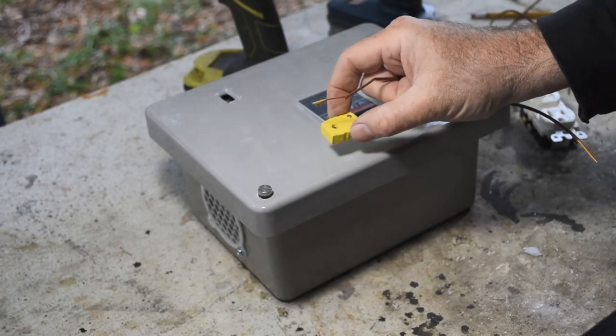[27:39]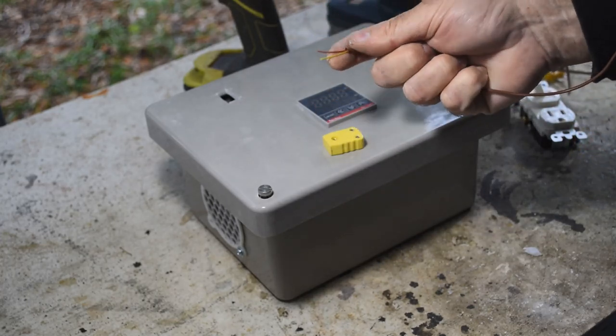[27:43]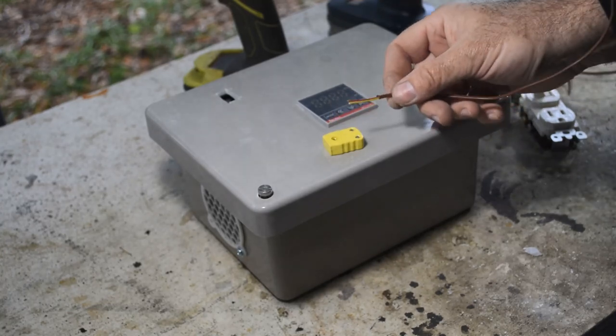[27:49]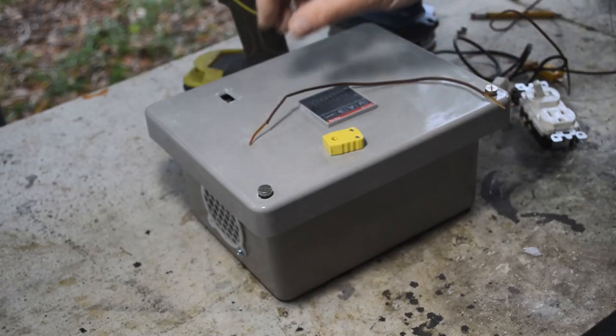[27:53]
So hook the red side up to the minus side of the connector, and whatever other color you've got, depending on what type of thermocouple you're working with, up to the plus side. This is type K, so we've got red and yellow here, and red is negative again. So let me go find my jeweler screwdrivers, get this made up, I'll get it glued in, and then we can start wiring all this stuff together. We're in the home stretch now. We'll have this up and running soon.
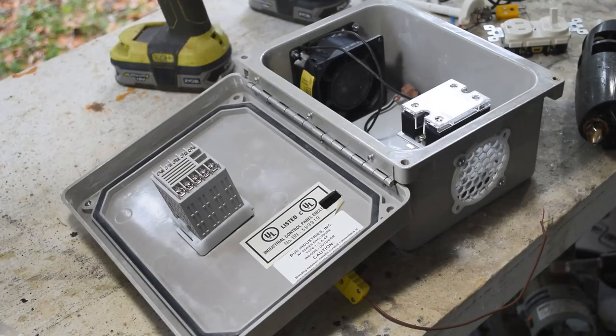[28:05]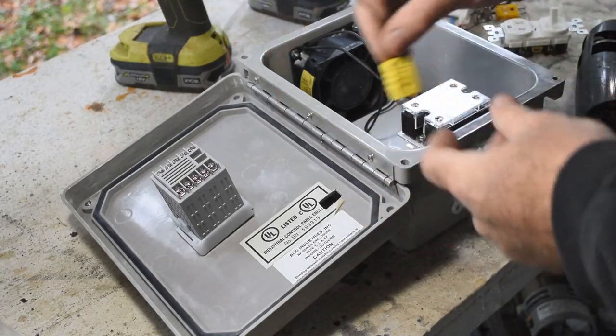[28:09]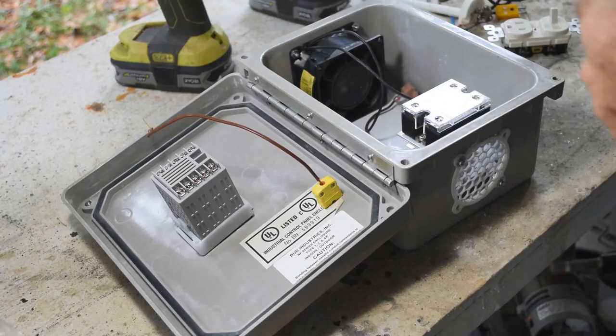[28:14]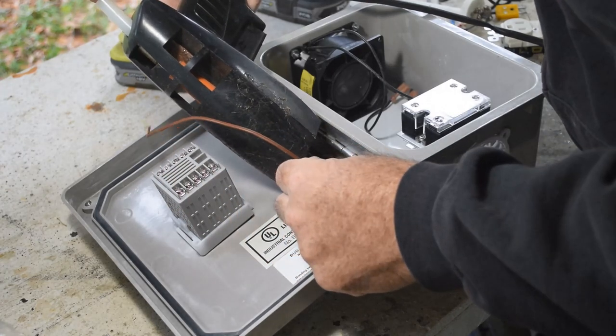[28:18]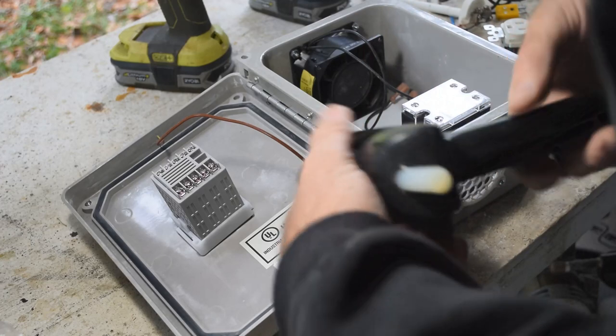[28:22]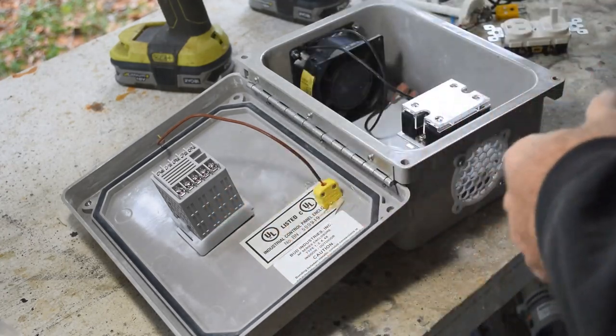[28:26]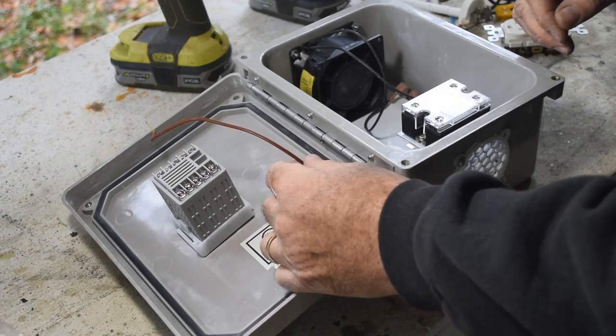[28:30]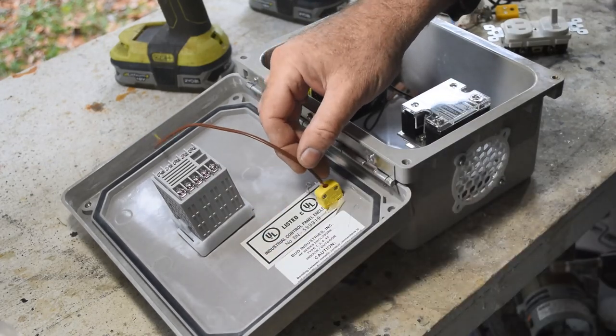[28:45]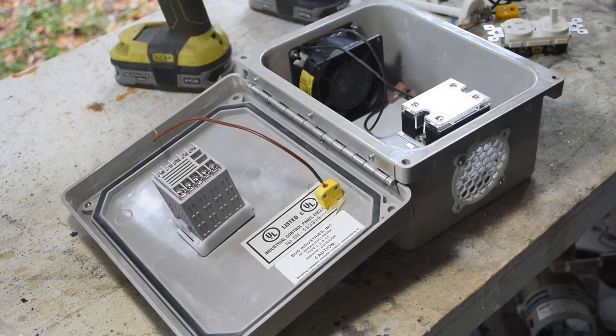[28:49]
Okay, I've got my little thermocouple connector pigtail made up here. So my plan here is to just hold this in place with a little bit of hot melt glue, because this will solidify really quickly. Just a little bit. Hold it where I want it until it hardens up. And then I'll come back and use some epoxy on the other side to hold it in place permanently, because I don't trust hot melt glue for structural stuff. But epoxy, I think, will work just fine. Okay, so that's setting up.
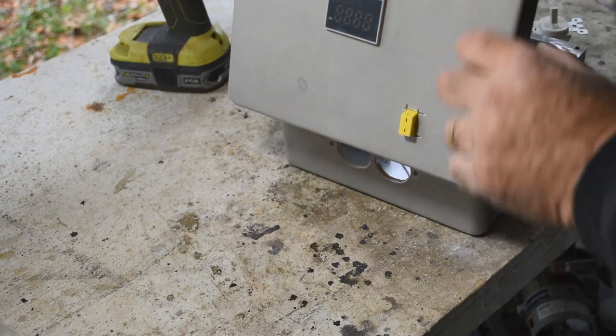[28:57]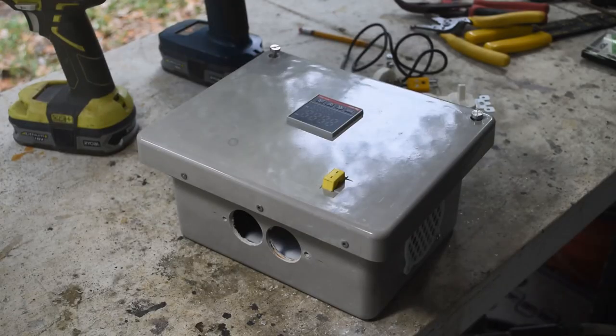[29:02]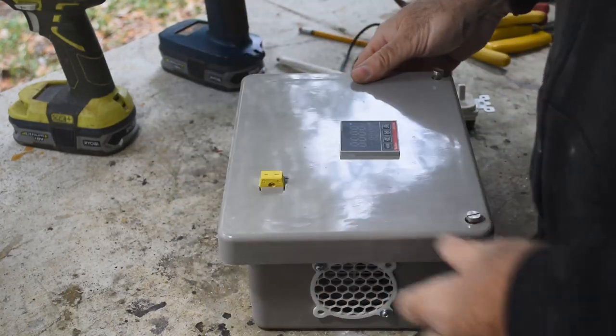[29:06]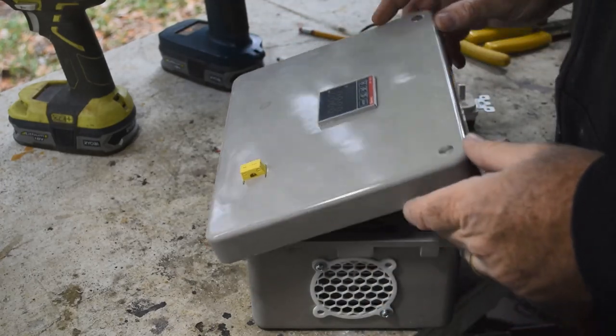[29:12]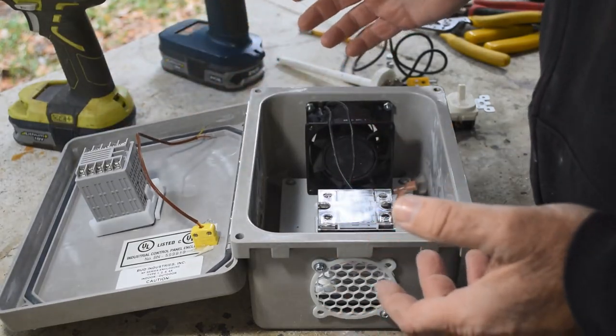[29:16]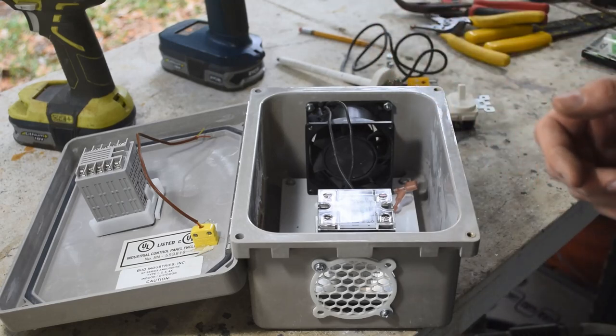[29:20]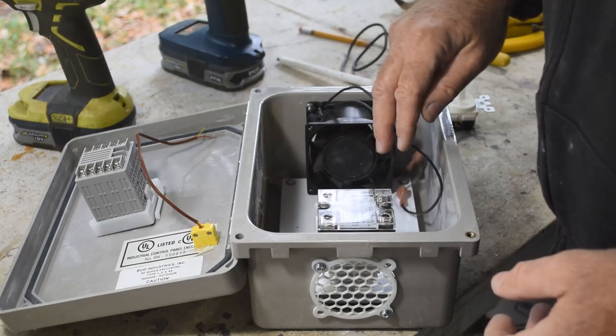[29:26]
Good. And I'll have to mix up some either epoxy or JB Weld or something, and I'll come at it from the other side around here to hold it in place. All right, I'm going to wait for a warmer day to use the epoxy on that, because it is really cold today, and that epoxy will take forever to set up in this weather. So I guess it's time to just start wiring up everything. It's a fairly simple circuit. I'll draw a schematic and give you a look at it, but wiring this up shouldn't take too long. Hey, I was an electronic engineer. I could practically do this with my eyes closed. Okay, it shouldn't be too difficult for you either.
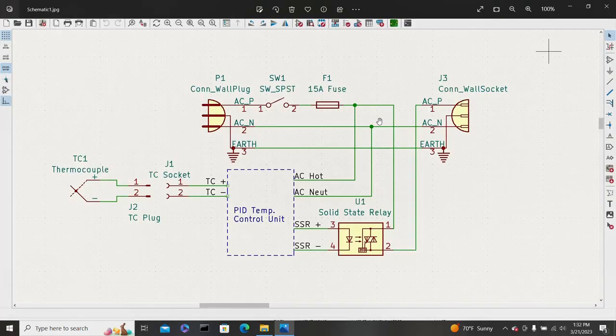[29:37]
All right, like I said, it's a fairly simple schematic. There's not a lot to this thing. Basically, it's just built around this PID temperature control unit. All of the complicated stuff is inside of it, and you've just got a few connections that you have to make to it. All right, we need a thermocouple input, and I got a socket on that so I can disconnect it and reconnect it. You don't have to have a socket if you don't want to. I find that's more convenient.
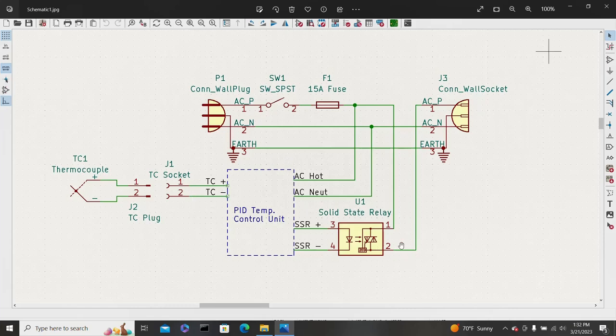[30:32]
Okay, the rest of this stuff is inside the box. We've got the solid state relay, which is gonna turn the power on and off to the heating elements in the oven. All right, and you're gonna have a plus and a minus coming out of your PID temperature control unit going to the solid state relay. You don't have to use the same control unit I'm using. You don't have to use the same solid state relay I'm using. They're often sold as a pair, and the ones I bought may not be available tomorrow or next week, but something else might be. But just basically follow the directions, or whatever writing is on your units.
All right. So I didn't put screw numbers on here or anything, because your unit might be different than mine. But it's going to have an AC neutral input and AC hot input to power it. It's going to have a solid state relay plus, solid state relay minus outputs, and it's going to have a thermocouple plus and thermocouple minus inputs. So they're all going to have that. We've got power coming in from the wall plug. We're going to have an on-off switch. We're going to have a fuse. That's kind of a late addition to the project, but it's always a good idea to have a fuse.
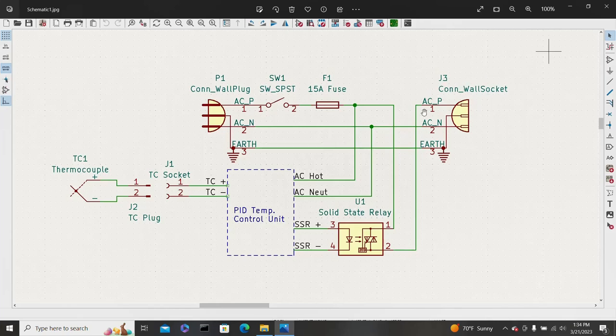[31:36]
And we are going to have a wall socket so that we can plug the oven into it. And this is just going to measure the temperature in the oven. And if it's below the set point in the control unit, it's going to turn on the solid state relay, which will send power out to the oven through the wall socket. And if your temperature in the oven gets up to the set point, well, it's going to turn off the solid state relay and no more power will be going to the oven. And that's the way it's going to throttle the heating elements in the oven.
And it could do this fairly quickly. You may see that it's going on and off fairly quickly to try and keep the temperature where it needs to be. Okay, so like I said, fairly simple, not much to it, easy to wire up.
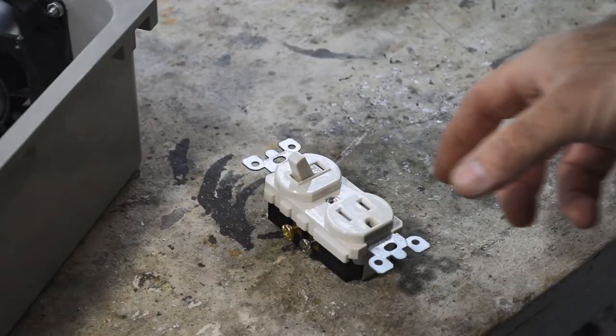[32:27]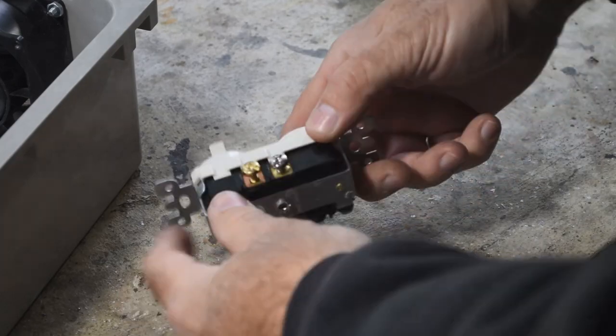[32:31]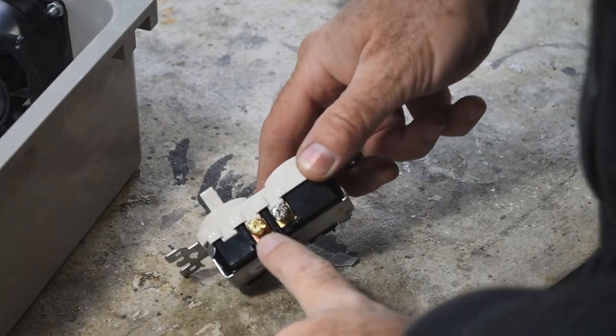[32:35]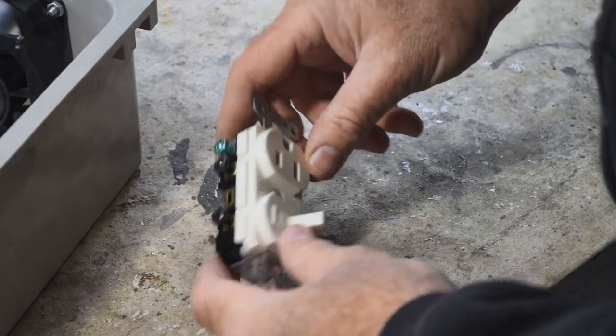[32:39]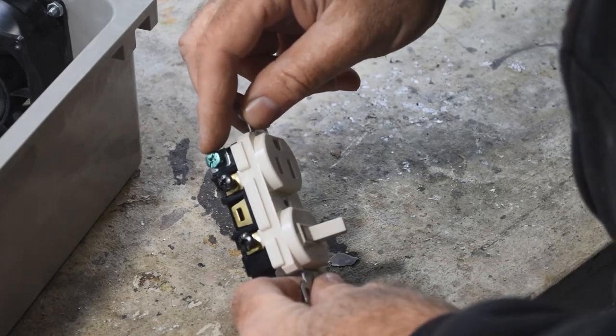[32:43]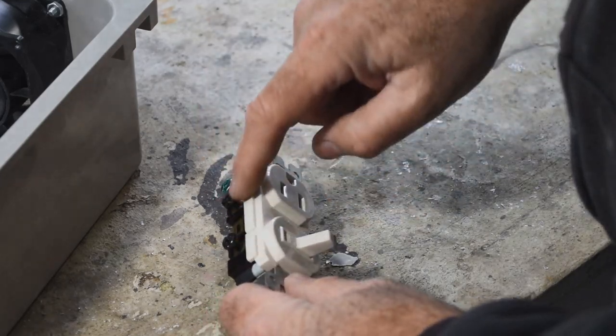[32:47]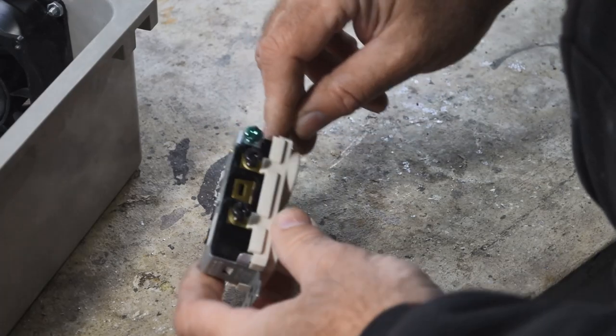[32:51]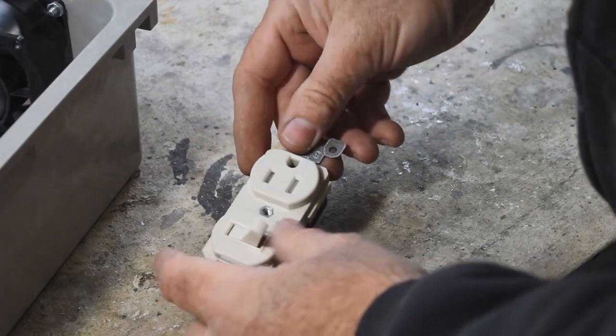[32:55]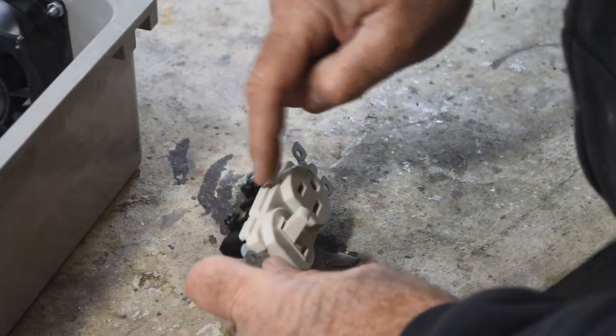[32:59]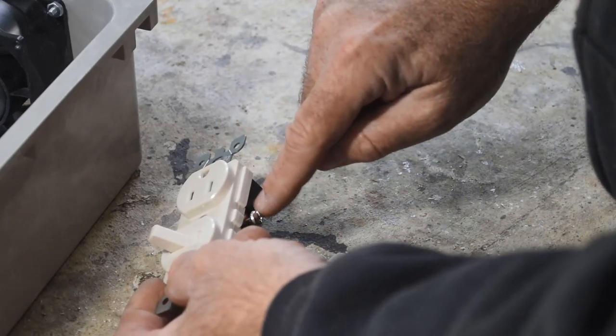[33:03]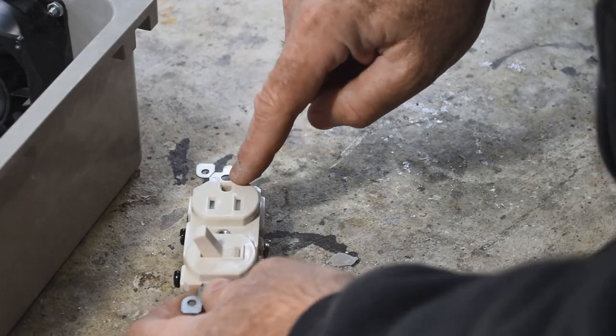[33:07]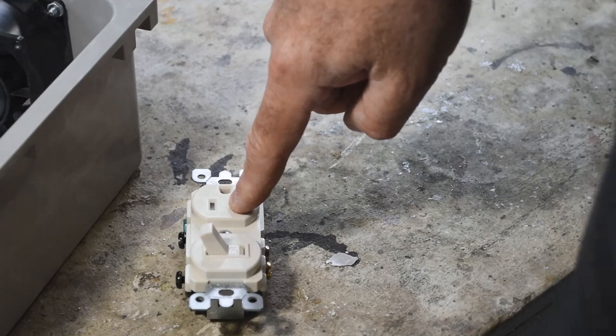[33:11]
Okay, one wiring issue we need to deal with is this switch. Now the way this is set up, this is your hot line in, okay? And this would be your neutral right here. And of course you got a ground pin over here, or a ground screw over here. Now, the way this works is you don't even actually have to connect anything to either of these, okay? Because there's a bridge right there between them. So when this switch is on, power would come from your hot line through here across this bridge to the hot side of your outlet. And of course, you got your neutral line going to the neutral side, and you got your ground line going to your ground lug.
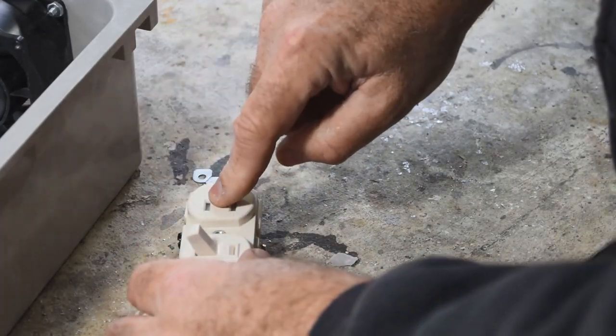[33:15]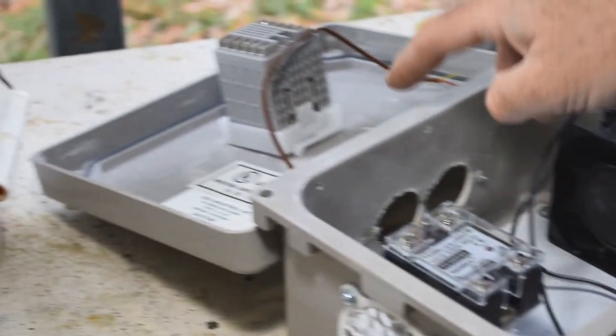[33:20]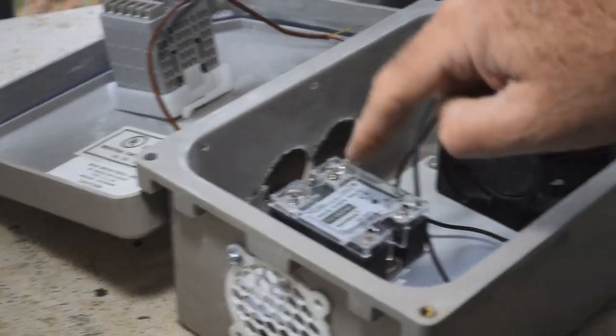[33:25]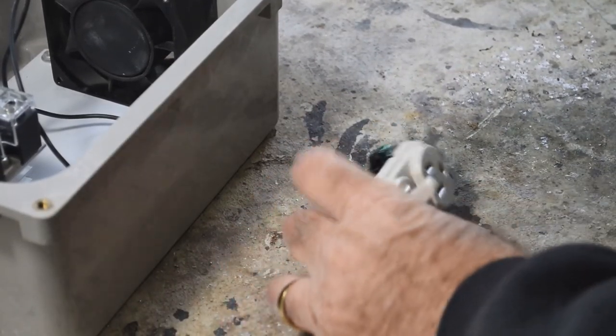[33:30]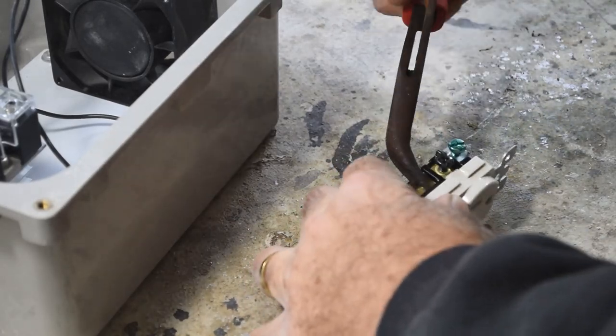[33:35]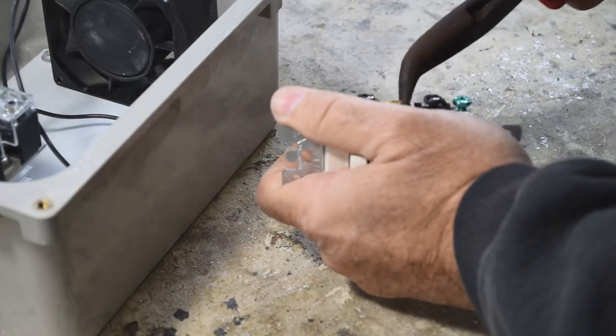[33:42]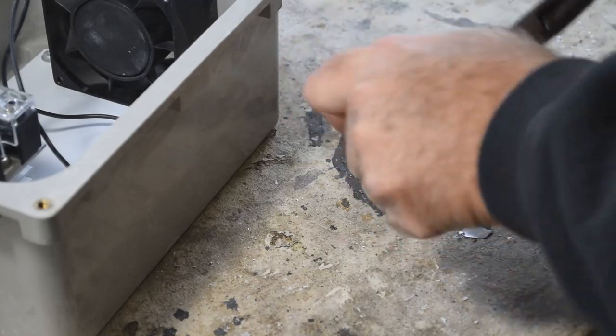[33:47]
But we don't want this outlet to be live when the switch comes on. We want this outlet to be live when the controller over here tells it to be live through the solid state relay here. So we're going to need to make some modifications. First thing we need to do, we need to break this bridge off. And it's designed to be broken off. If you bend it a few times, metal fatigue will break it off. In theory, this one's tough. There it goes. Okay, so we got it.
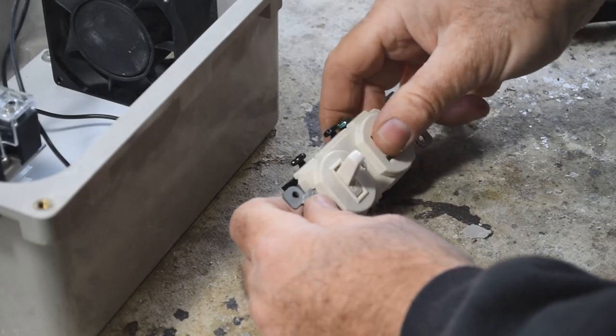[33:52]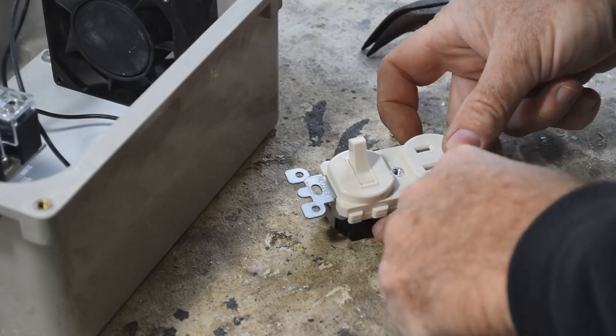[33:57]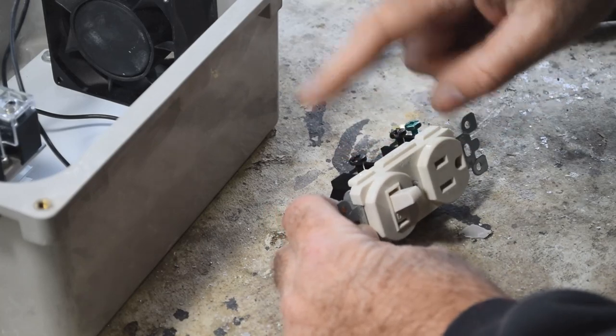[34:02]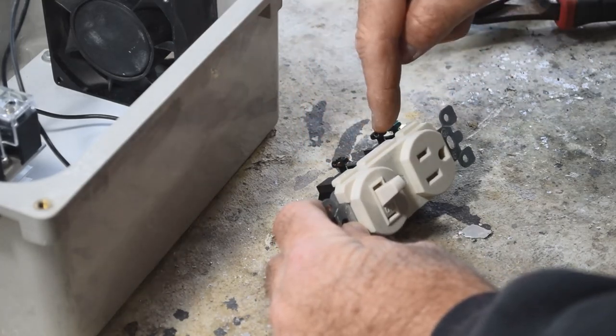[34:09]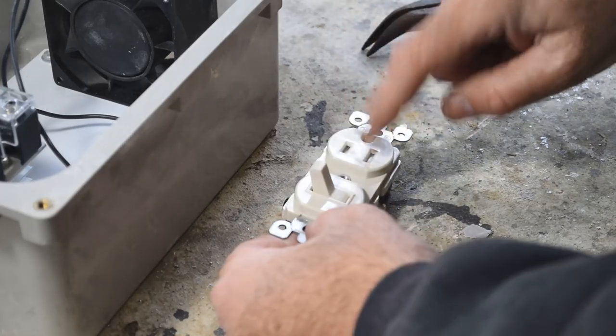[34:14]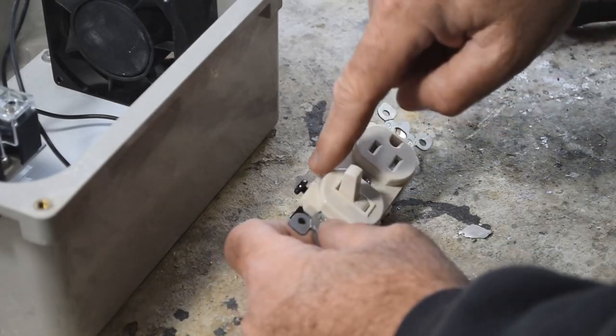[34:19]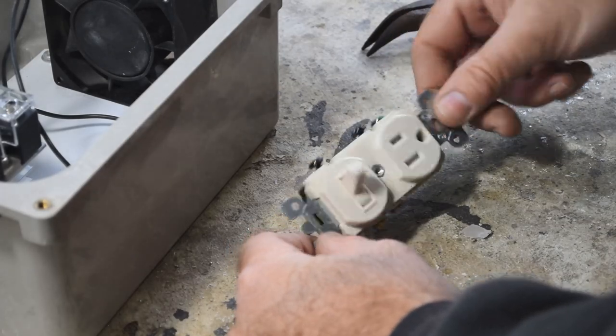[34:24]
So now, the outlet is completely independent from the switch. So the way this is going to work now is, your hot line's coming in here, it's going out here. It's going to go to power both your controller and the solid state relay. And then the output from the solid state relay is going to be going into here. And that's where you'll get your power for your outlet from, rather than having it come directly from the switch. I hope that's somewhat understandable. We'll take another look at the diagram.
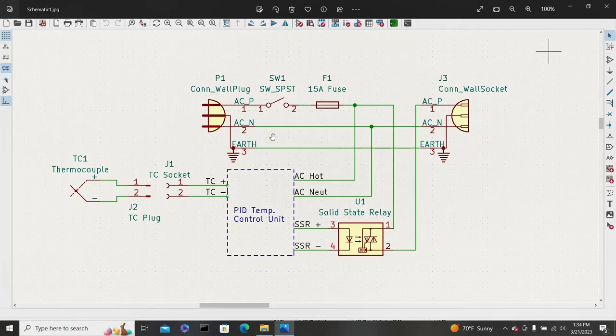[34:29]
Now here's the change we need to make to the switch plug combo, okay? Basically, as it comes out of the box, the switch is wired directly over here to this plug, all right? We don't want that. So we've got to break off that little tab so that the power doesn't go directly to the plug. We want the power to come down here to the solid state relay and to the PID temperature control unit, but we don't want it to go straight to the plug. We want the power to go through the solid state relay before it gets to the plug. So that's why we have to break that little tab off.
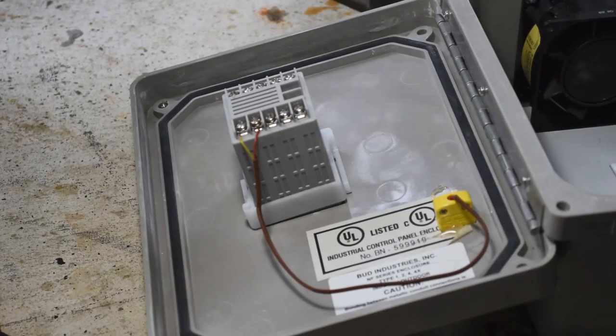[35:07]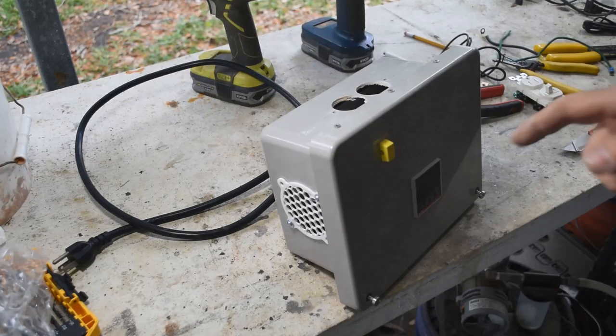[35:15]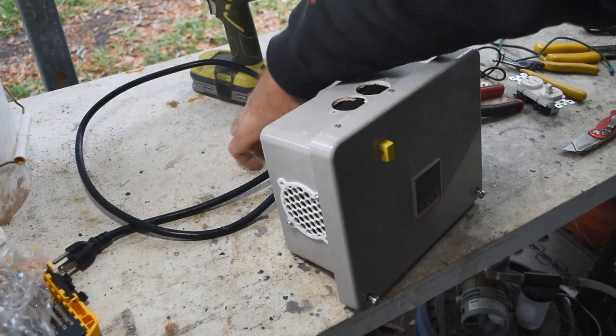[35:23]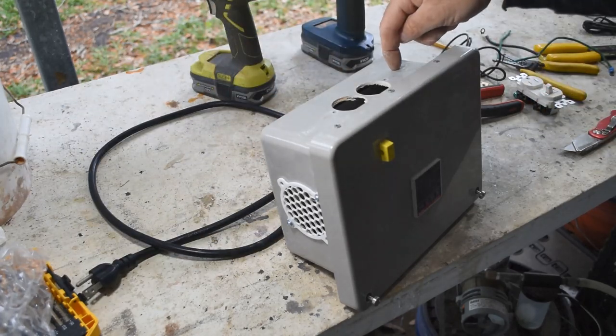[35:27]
All right, the wiring has begun. I have my little thermocouple pigtail wired into the connectors on the back of the controller. Now I just gotta wire everything else. Okay, I forgot something. Time to fess up here. And some of you may have already noticed the omission. I forgot to drill a hole for where the power cord will go in. Yes, so I need to do that.
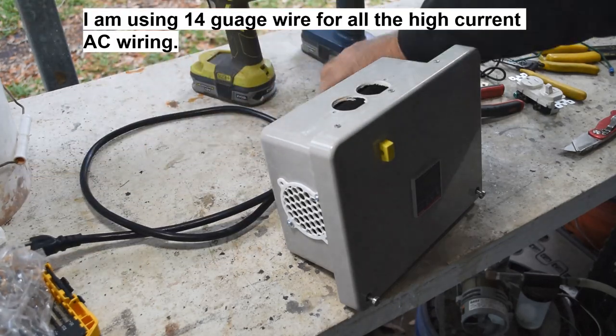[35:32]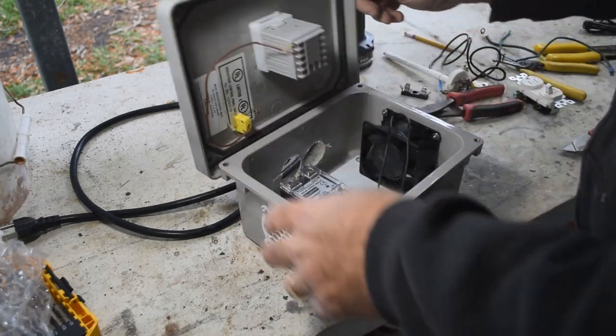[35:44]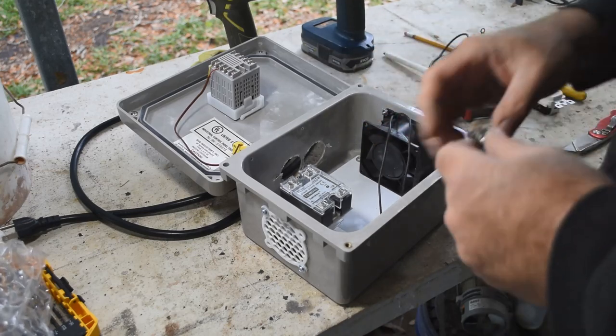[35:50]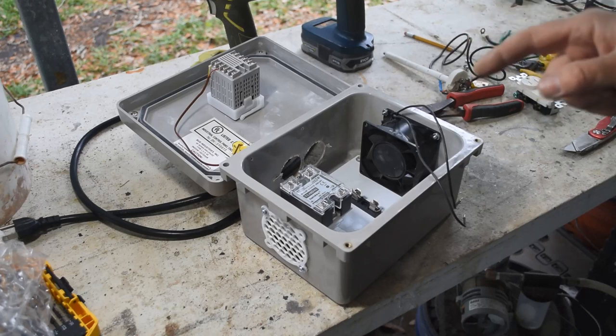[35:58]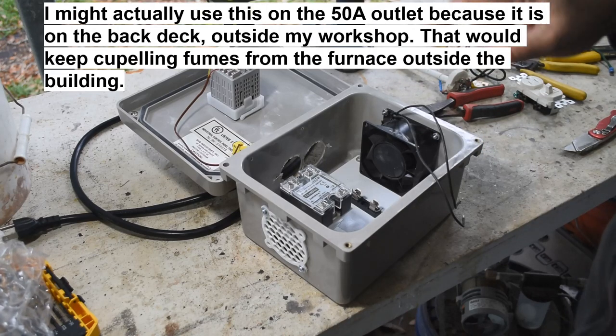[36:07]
And speaking of power cords, we're using a fairly short and heavy duty power cord, because this thing's gonna be drawing a fair amount of current. Okay. So I'm going to keep the cord short and heavy gauge. And speaking of current, I have decided to make a last minute change in the design here. I'm going to add a fuse to this rather than relying on the circuit breaker to blow if there's a problem. Because in my workshop, I have a variety of different outlets wired for different amperages. I have 15 amp outlets, I have 20 amp outlets, I have 50 amp outlets. Although I would have to make an adapter to plug this in the 50 amp outlet.
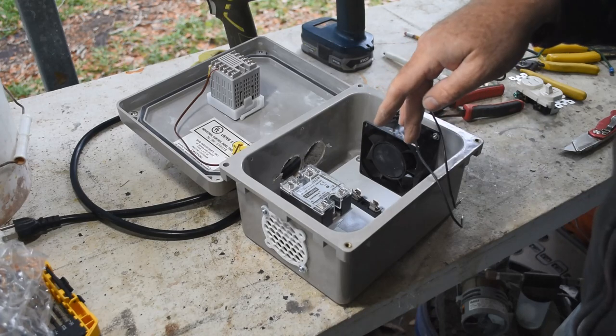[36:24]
But yeah, I don't want to rely on the circuit breaker to blow, because this thing's normally only going to be drawing around 12 amps in normal operation. If there's a problem, if it gets up to 15 amps, I want this fuse here to blow rather than relying on the breaker to pop, okay? So I'll wire this in and put a 15 amp fuse in it.
If this thing was drawing 20 amps, certainly there would be some kind of problem. I wouldn't want to rely on a 20 amp breaker to blow, or certainly not a 50 amp breaker. This thing drawing 50 amps, it's going to be a fireworks display, okay? So I'm going to put in this fuse holder and put a 15 amp fuse in it, and if for some reason this thing gets up to 15 amps, that fuse will blow. Everything will be happy. All right, we won't have any fireworks display.
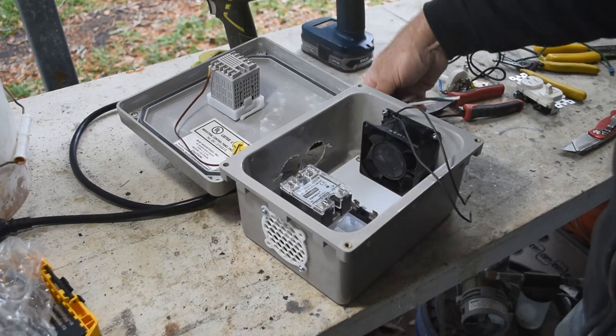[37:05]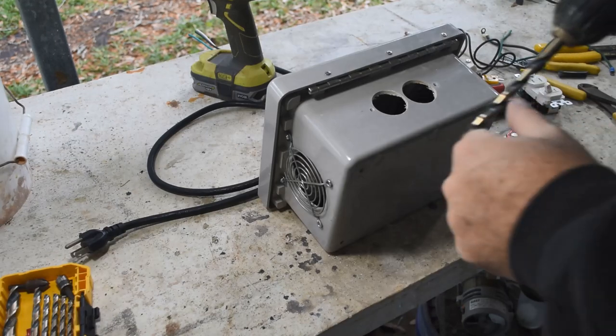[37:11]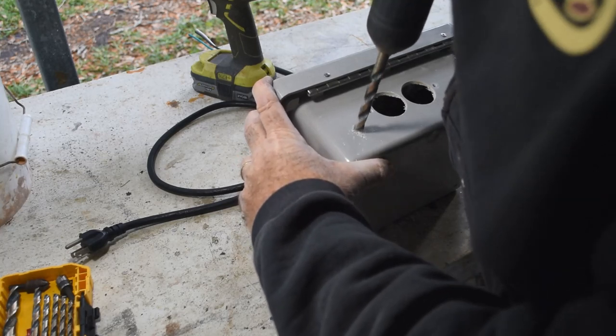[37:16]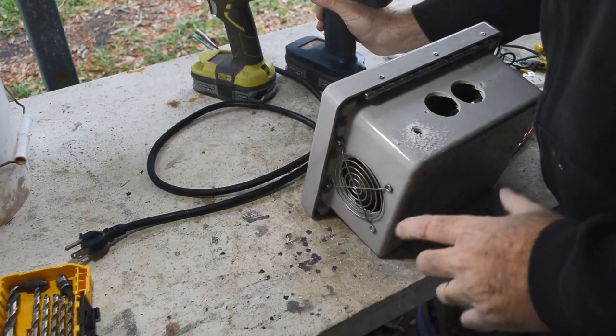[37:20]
So let me get a hole drilled for the power cord coming in before I forget to do that again. And then we can get to seriously wiring this thing. I think I'm going to put the hole for the power cord right about here. That should work.
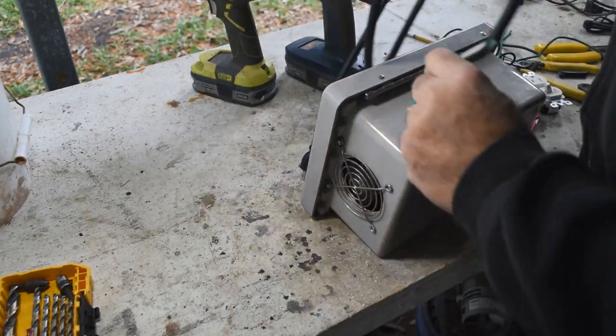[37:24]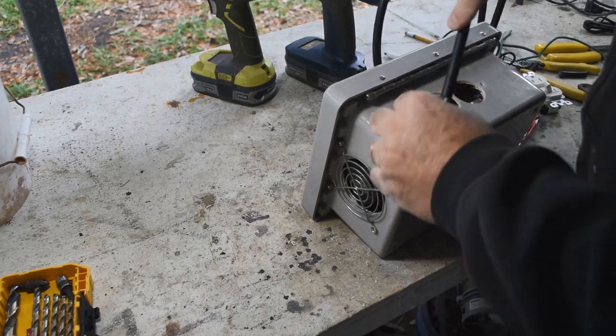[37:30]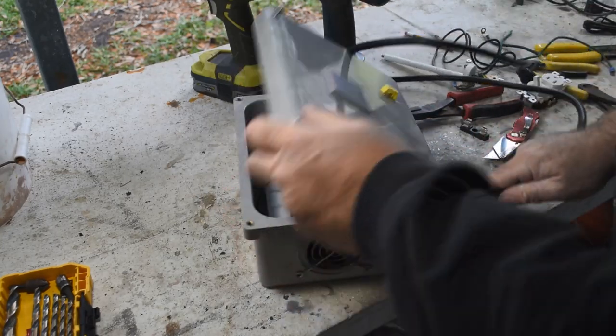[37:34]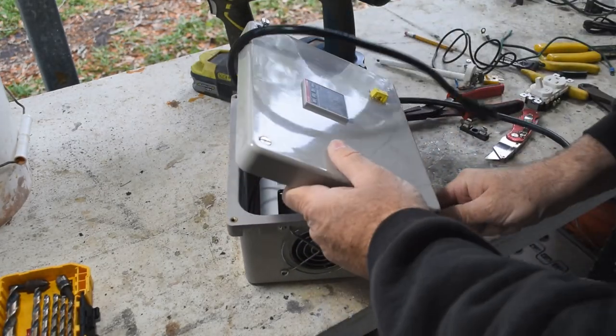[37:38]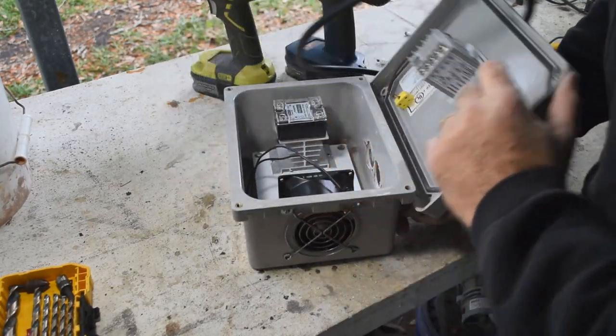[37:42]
And I didn't mention it, but I'm using 14 gauge wire. It's fairly heavy gauge wire. It should be able to handle the load. So all of the high current AC wire in here is going to be 14 gauge. Okay.
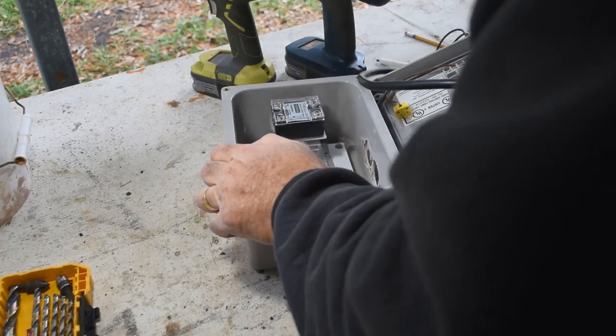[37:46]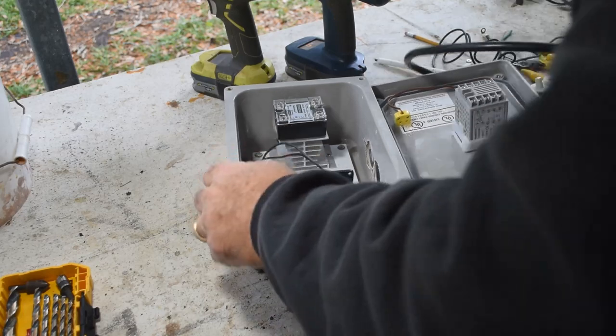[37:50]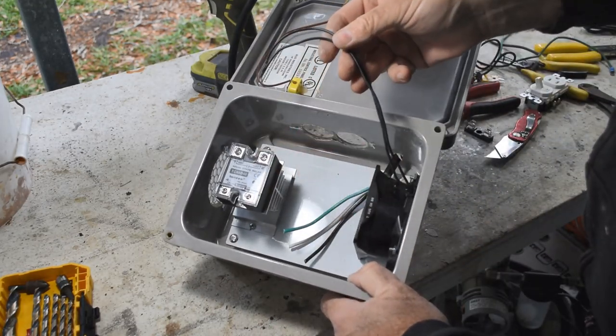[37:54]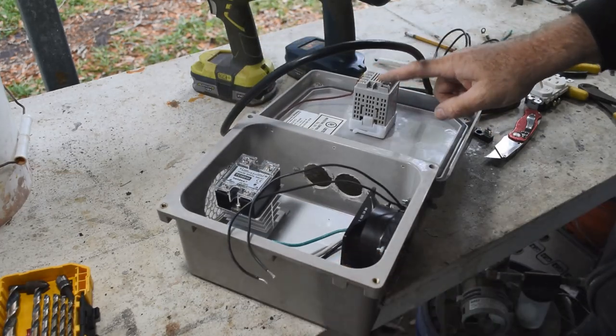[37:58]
There's also going to be some DC wiring, which doesn't need to be heavy gauge at all. And the fan wiring doesn't need to be heavy, and the wiring to the controller doesn't need to be heavy because they're not drawing much current. But the high current stuff is all going to be 14 gauge. All right. Get back to wiring now.
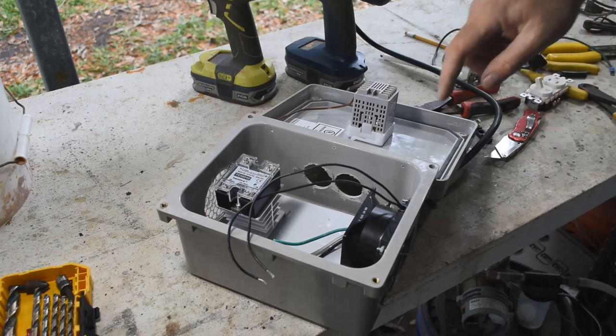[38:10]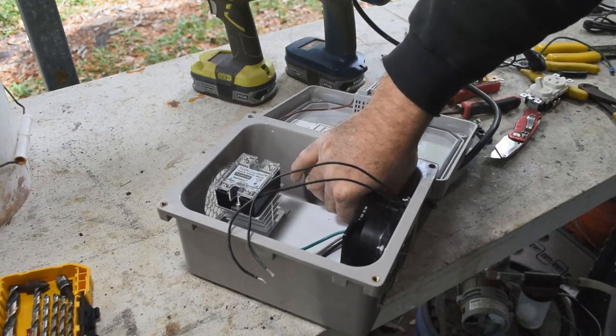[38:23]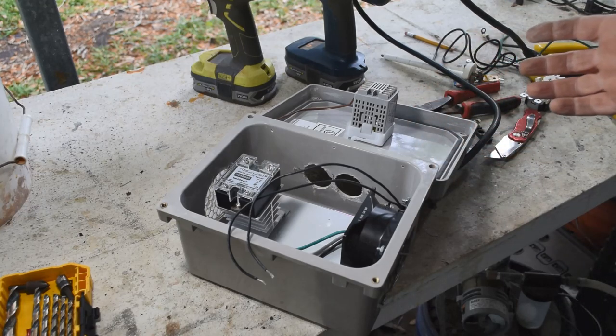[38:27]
Oh, and I don't have a grommet that's going to work for this. So what I'm going to do is I'm just going to put a couple of wire ties really tight on the inside so that the wire can't pull out. And I think that'll work okay. Again, I'm just making this out of what I got around my shop for the most part. I'm not buying a lot of stuff, all right? So, let me get back to wiring.
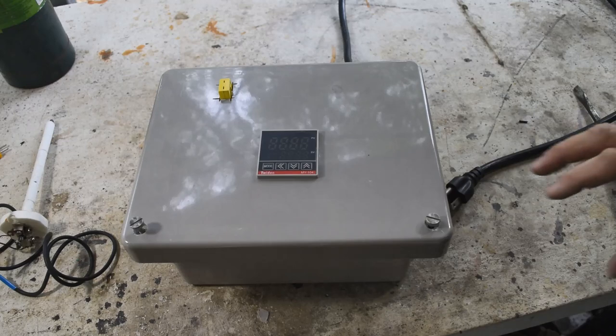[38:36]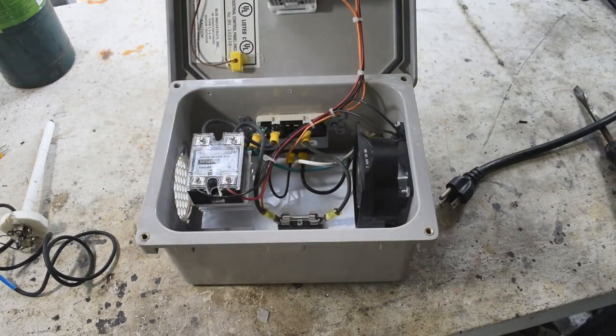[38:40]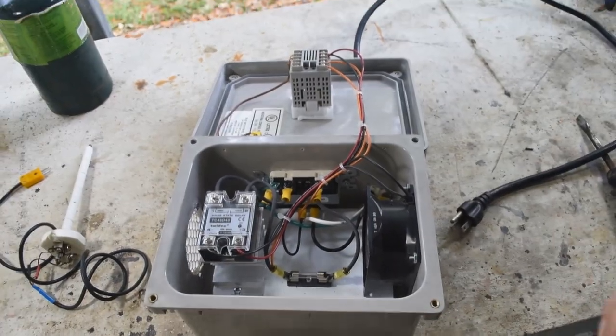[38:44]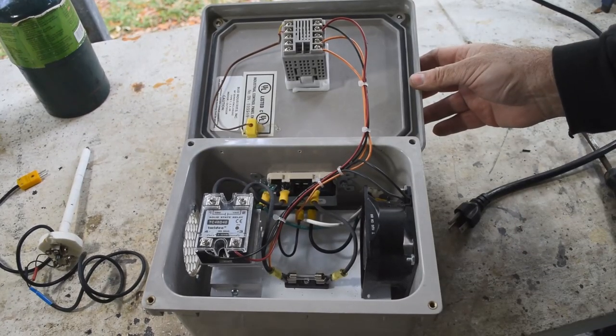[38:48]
All right, are you ready for the big reveal? It's completely wired. There you go. So, I didn't make you watch me wire it. Saved you from watching an hour of tedious wiring and hearing the occasional curse word, but this actually went pretty smoothly. So I guess we're ready for the smoke test.
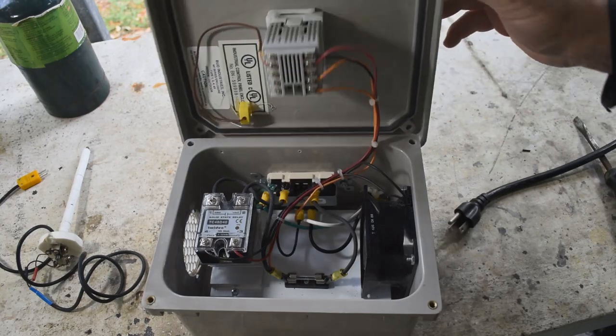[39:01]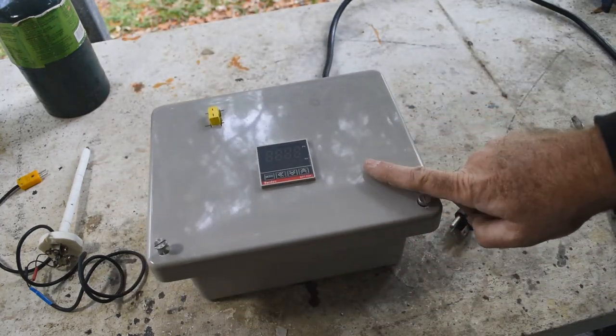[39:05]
We'll see what happens when we plug this thing in. And rather than trying to run the furnace with it right off, I think I'm going to find another load that's going to be a little bit more manageable, and we'll be able to see whether it's on or off without waiting for the wires to start glowing. So let me find something else, and we'll give it the old smoke test.
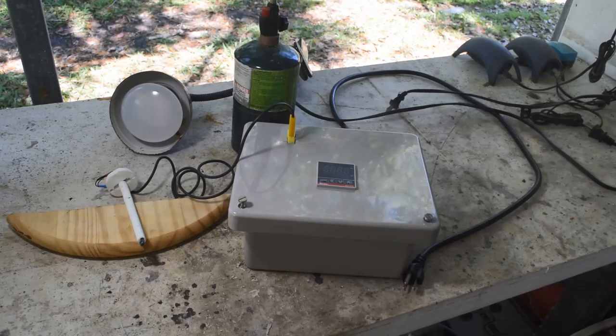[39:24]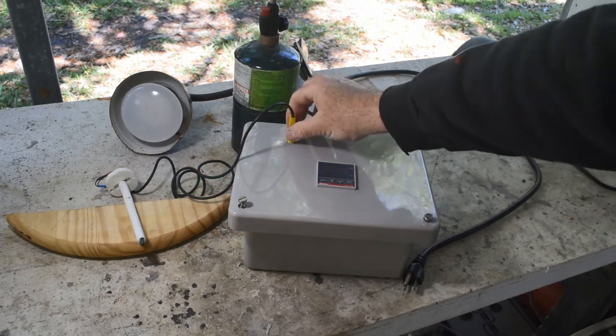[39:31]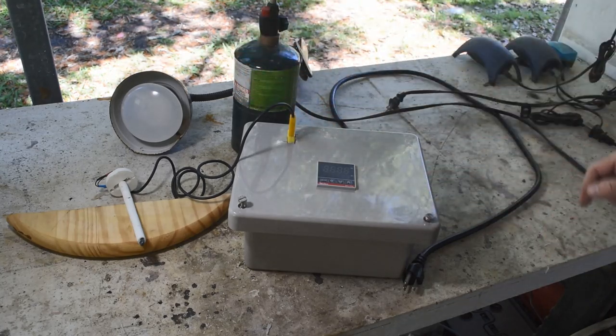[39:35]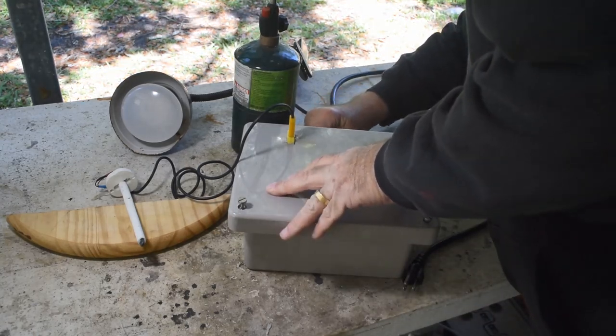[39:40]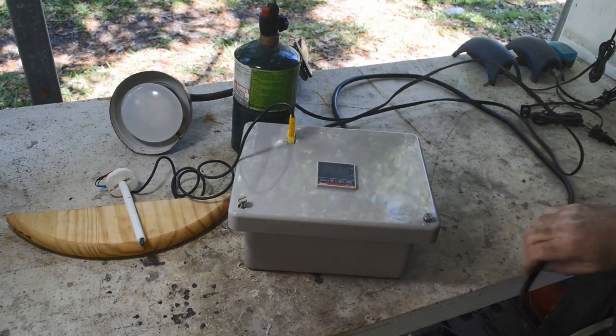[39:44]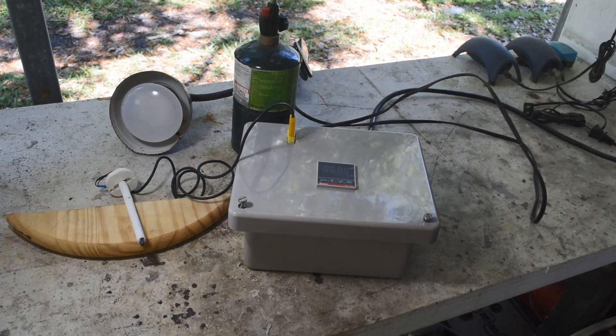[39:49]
All right, it's time to give this thing a test. I have one of my kiln thermocouples plugged into the socket here, and I have one of my work lights back here. I'm going to plug that into the outlet in the back, and that will be our test load, okay? Okay, I'm going to plug the controller into the power. It's always a little scary when you do this the first time with something you built. No sparks, no flames. Good so far.
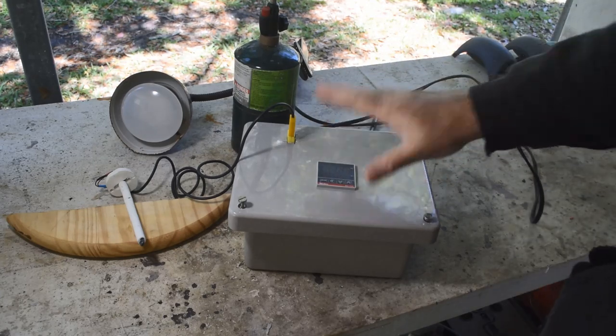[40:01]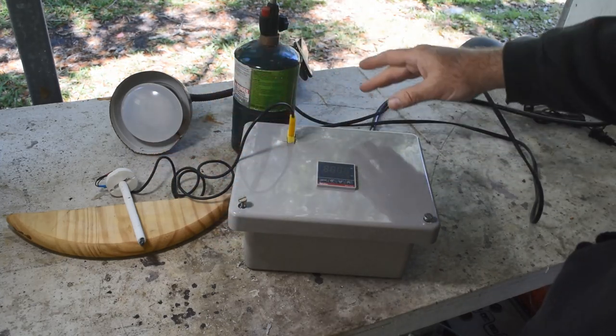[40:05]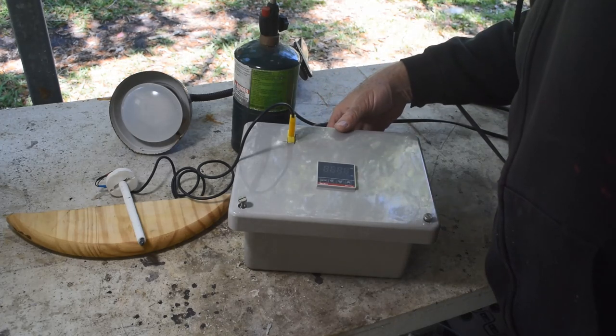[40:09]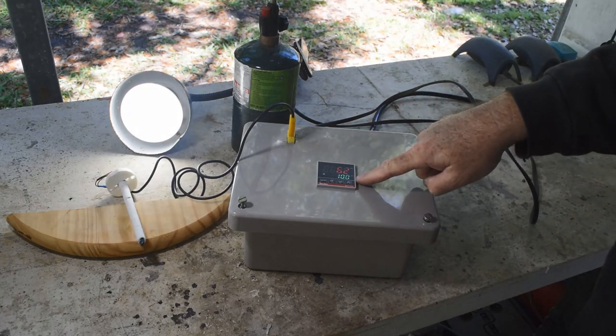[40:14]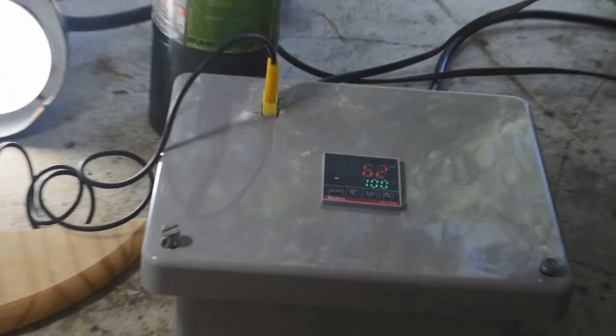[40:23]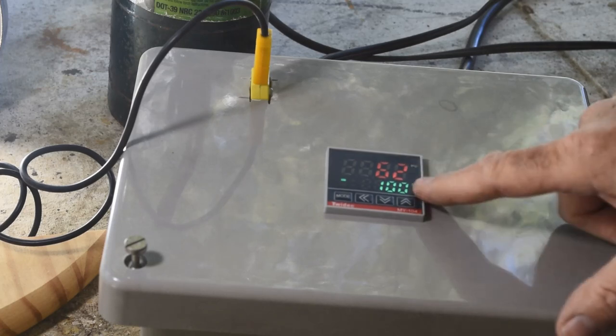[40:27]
Now, here's what I propose to do. I'm going to turn this on, and it's quite a chilly day today. So the thermocouple is going to read a very low temperature. So let's see what happens. Well, okay. And look, our light came on. Our thermocouple is reading 62 Fahrenheit. I don't know if that's showing up. 62 Fahrenheit. And apparently the set point it came up at was 100 degrees.
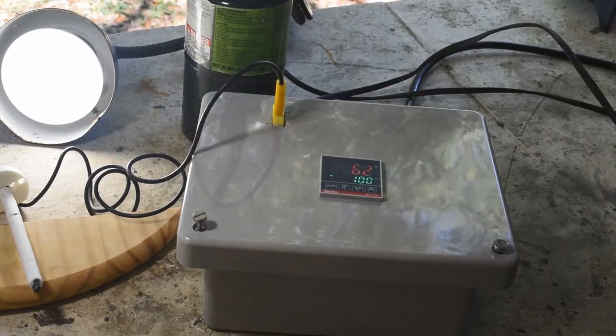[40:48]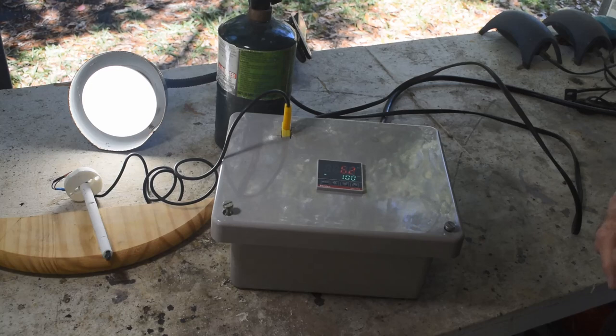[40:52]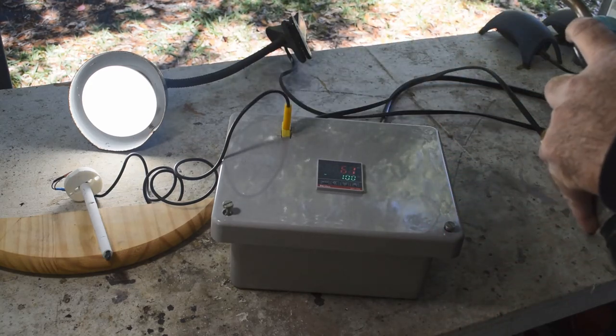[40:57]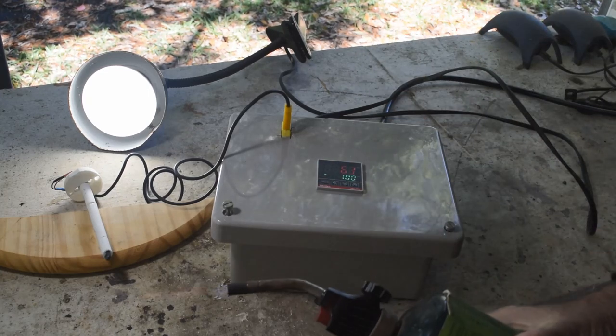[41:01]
I have not powered this up before. I have not messed with these settings. So it looks like the thermocouple is reading 62 degrees out here, and the set point is 100 degrees. So this is telling the heating element to come on because it's too cold, so that's why our light came on. All right. So what I have here is a propane torch. I'm going to light the propane torch, and I'm going to warm up the end of the thermocouple, and we'll see what happens.
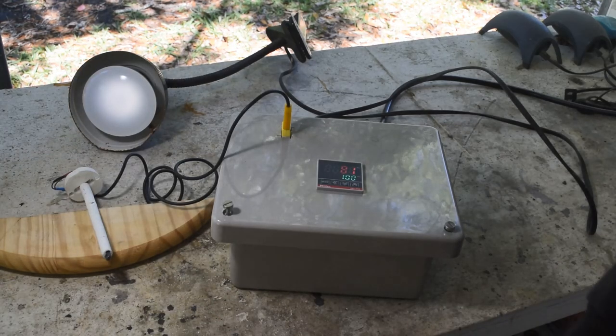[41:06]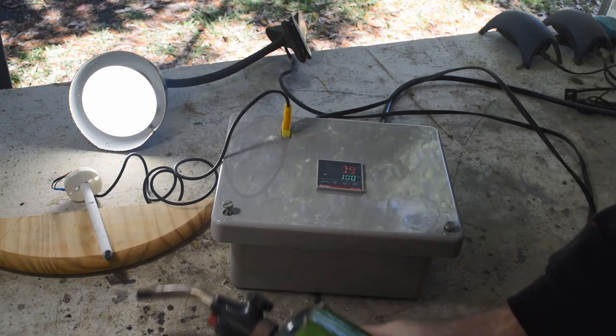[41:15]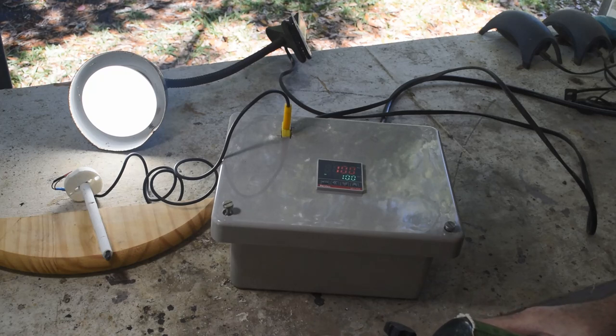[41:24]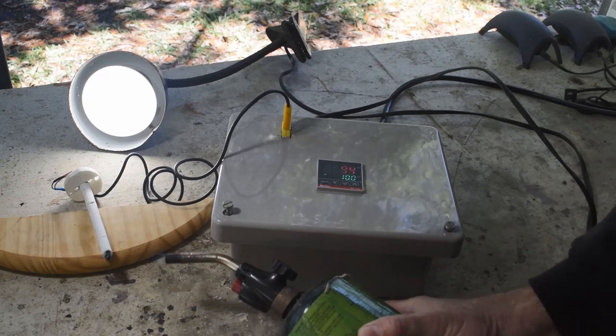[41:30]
Look at the temperature coming up. The light went out. Now it's blinking. That's to be expected with this sort of temperature controller. It measured the rapid increase in temperature, and it turned off the heating element. At least it thinks it's turning off the heating element. And now it's throttling the element to try and keep the temperature where it needs to be. But, of course, the thermocouple's cooling off again. So, yeah, basically it's working just the way it's supposed to work.
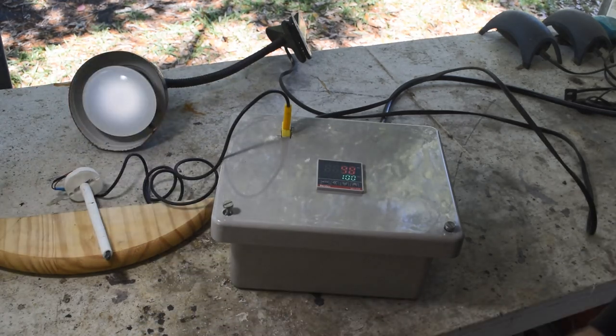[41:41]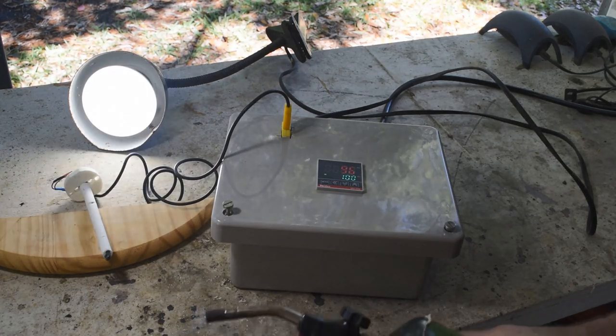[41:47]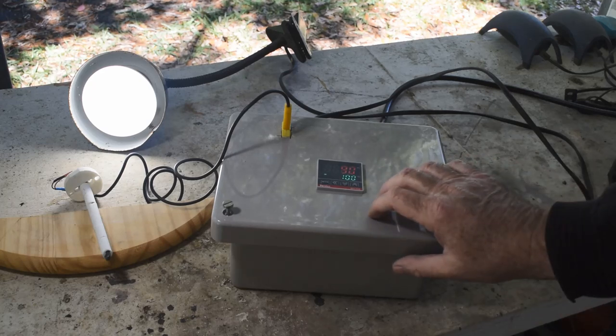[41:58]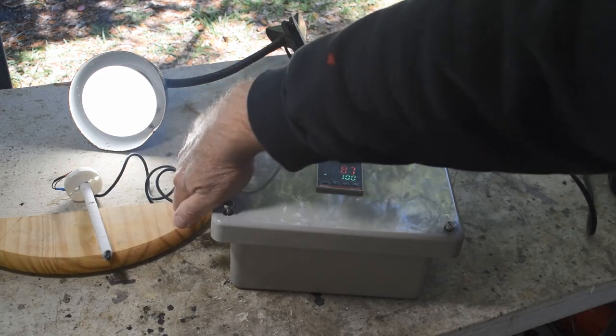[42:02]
All right. Holy cow, it works first try. I love it when a plan comes together. All right, so I guess the only thing we really need to do... Oh, I hear the fan running. Yeah, the fan's running. It's drawing air in and blowing it out.
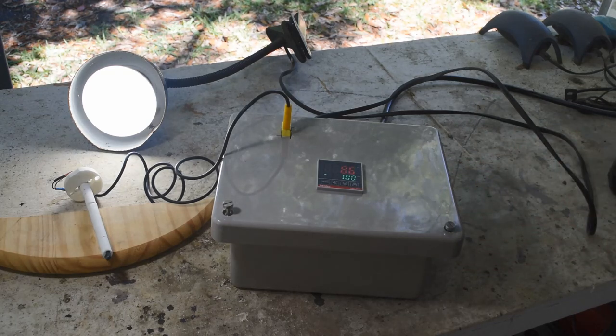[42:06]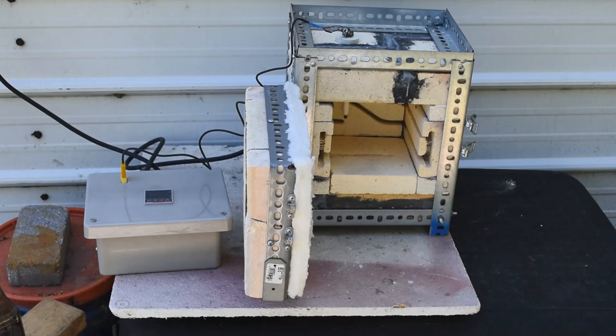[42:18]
Okay, so everything's working. All right, so I guess it's time to hook it up to the actual furnace and see if it's going to control the furnace the way I want it to. So let me set up for that. Okay, well, I guess it's time to see if this thing will actually control the Cupelling oven.
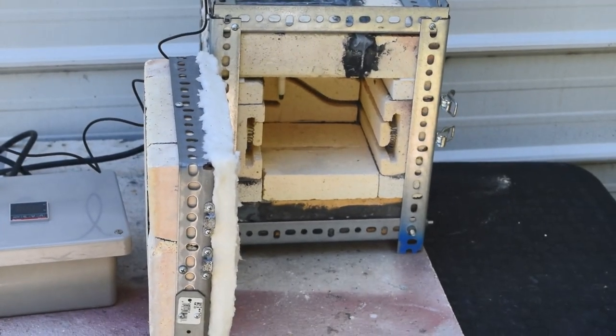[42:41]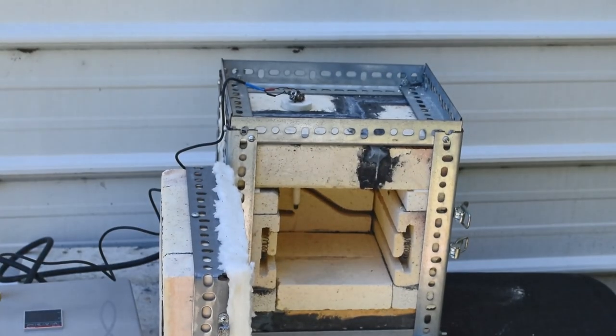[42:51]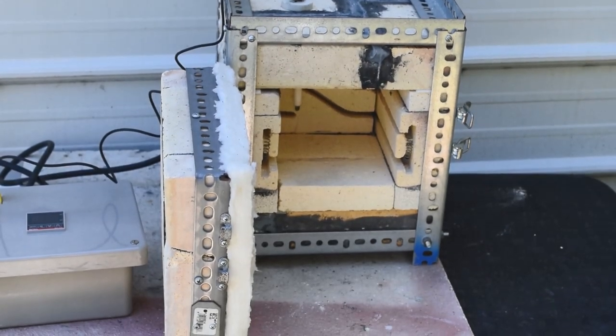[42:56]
So I haven't made too many changes to the Cupelling oven since the last video. And I'll put a link to the last video in the upper right. I have put a second catch on the door, which I discussed in that last video, to help hold the weight of the door when it's just in storage, because I figure that heavy door is going to sag over time. The hinges will sag. I drilled a hole up top to insert the kiln thermocouple in, and you can just barely see the end of it sticking down inside there.
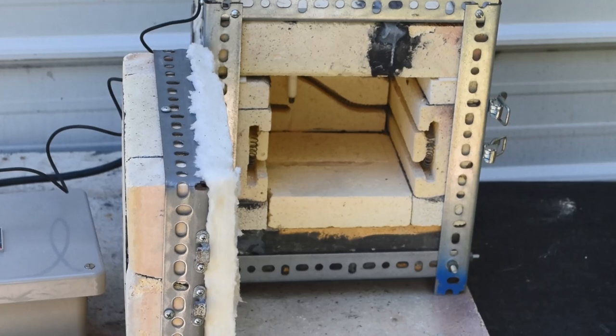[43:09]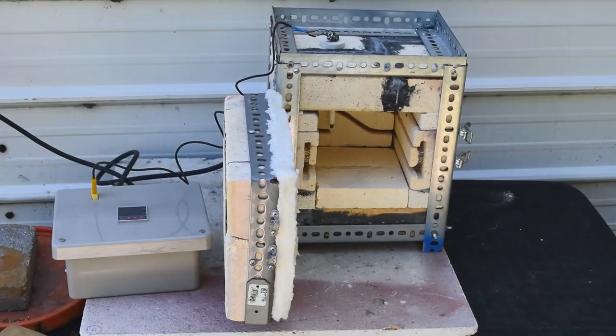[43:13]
Okay, not too close to any of the heating elements. You know, I really want to measure the temperature of the inside of the furnace, not the actual radiant heat coming off of an element real close by, okay? So I have the oven plugged into the controller. It's all ready to go.
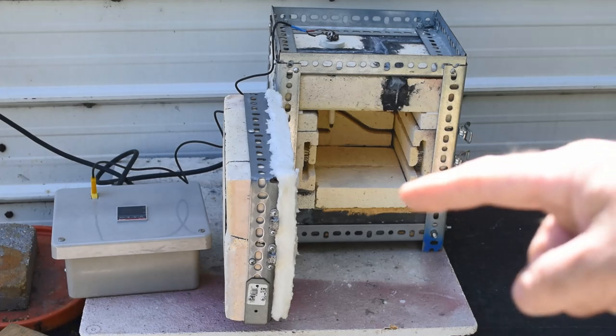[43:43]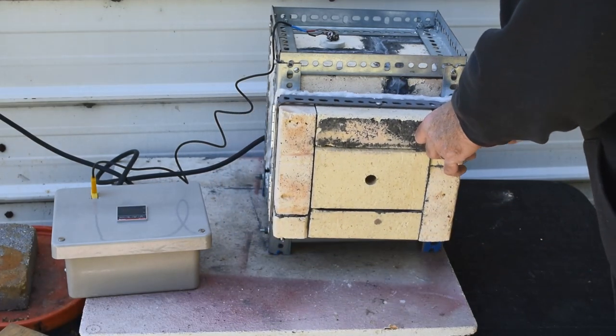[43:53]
I have converted the controller to centigrade from Fahrenheit because the temperature scale, and I'm a little confused reading the instructions here. The highest the temperature reading will go is 999, which is not very hot in Fahrenheit, but is blazing hot in centigrade. So we'll see how hot we can get it. I have set the temperature controller to 800°C. And we'll see what happens. We'll see if it will actually get the oven that hot.
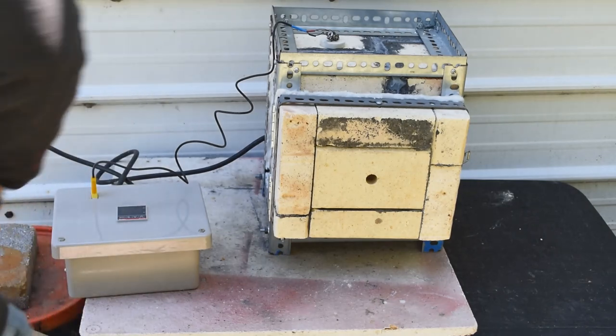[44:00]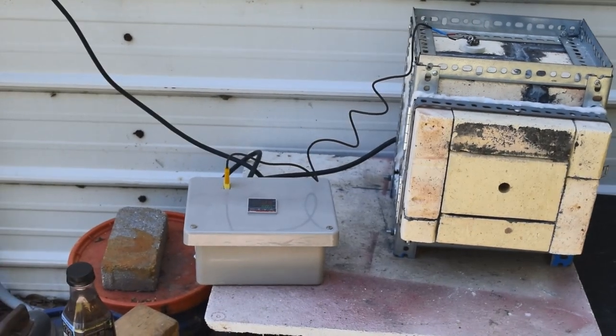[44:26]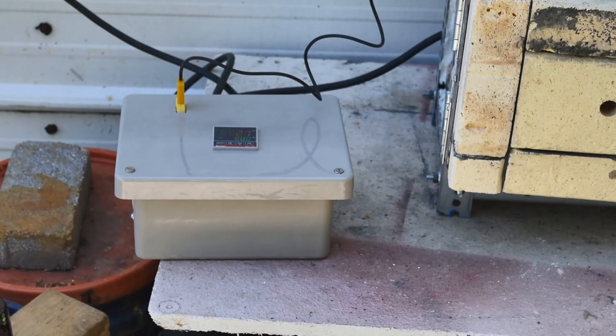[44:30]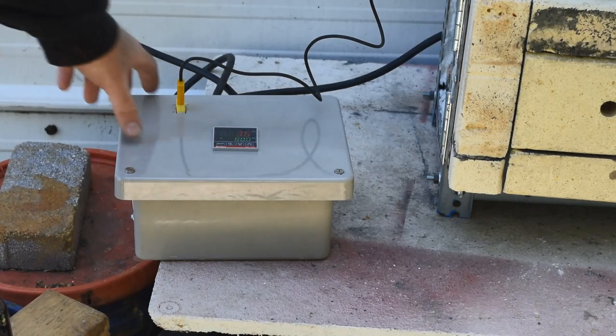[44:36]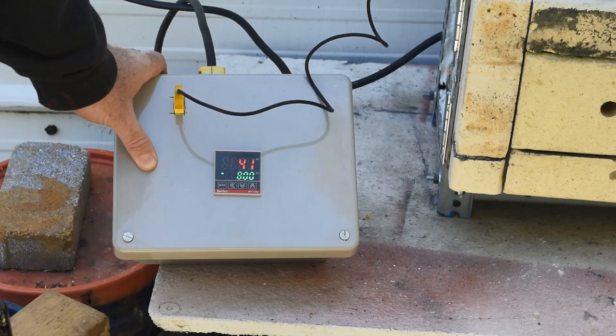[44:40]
Okay, so let me close the door. Come over here and turn on the switch. And it's booting up. And it says it's 16°C out here right now. It's a cool day. It's set for 800. The little light is on saying that the heating element's on. And hey, look at this. I'll zoom in on that for you if you can't see it. The temperature's coming up already. Look at that. 38, 39, 40, 41, 42, 43, 44.
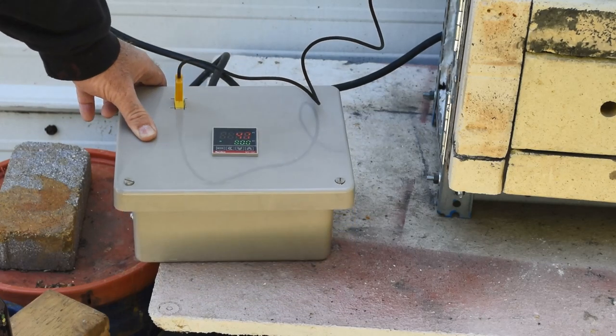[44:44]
Well, we'll just let this sit for a while and see what kind of temperature we can get this thing up to. See if we can actually get it up to 800°C. All right, that would be plenty hot enough, I think, for Cupelling. All right, so we'll just let this sit for a little while. Let's see, it's 243. And we'll come back and we'll check it in a little while and see what we got.
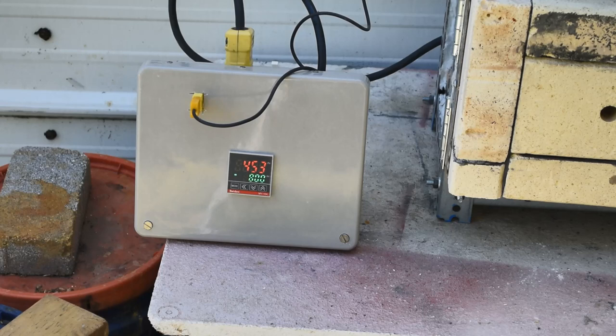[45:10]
Well, this is now 247. And look at the temperature. My goodness, it is coming up fast. That's coming up really fast. I wouldn't be surprised if I've got a little bit of a radiant heat effect coming off of the heating elements, but the inside of the furnace has got to be heating up pretty good too. We'll let it go a little while longer, and then we'll crack open the furnace and see what it looks like inside. We'll see how red and glowy it is.
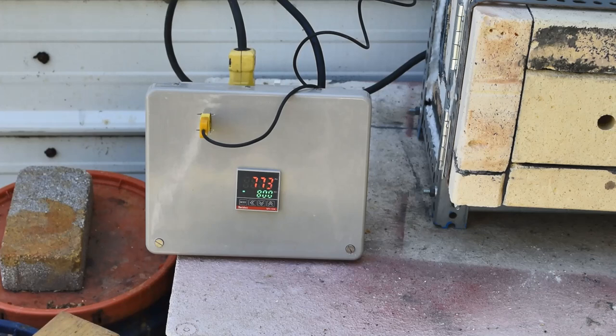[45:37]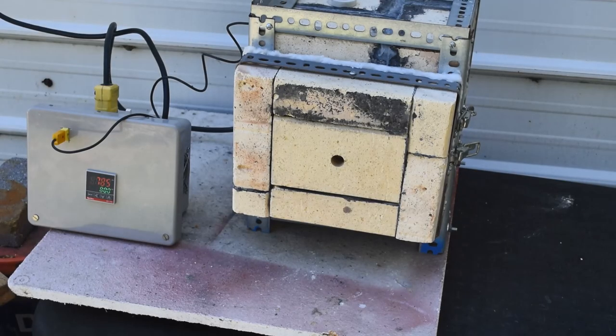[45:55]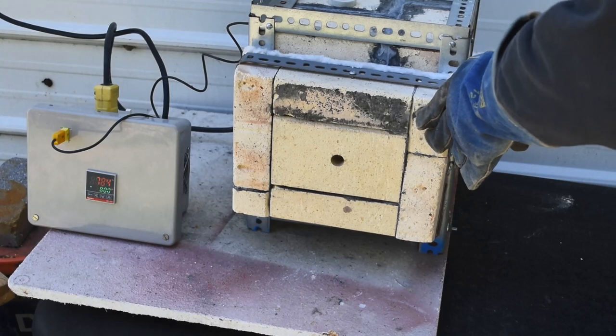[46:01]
Okay, it's 301, and we are at 774 degrees. Wow, this thing heats up quick. Let's take a look inside. If it's really that hot inside, I better go get my welding gloves before we take a peek inside. Okay, I reposition the camera a little bit, try and get you a better look inside. 784 degrees C.
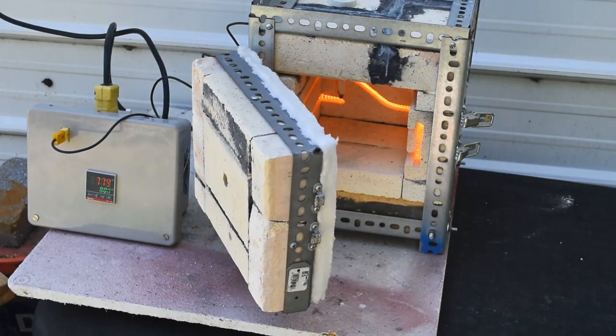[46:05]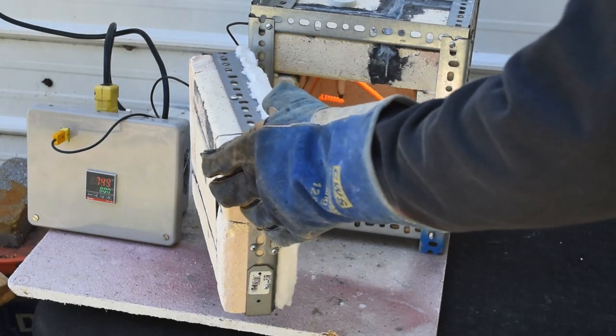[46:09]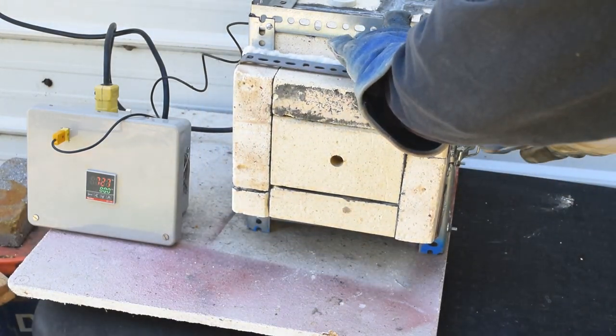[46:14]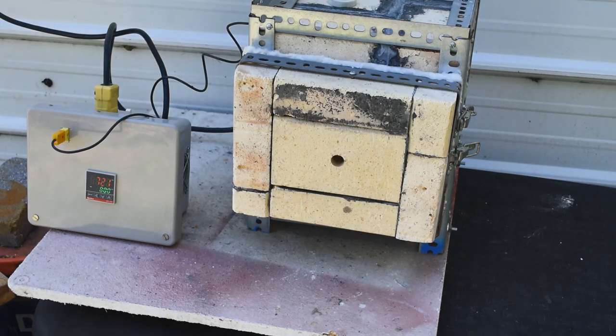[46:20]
Let's see what we got here. Oh, wow. Yeah, that is hot. That feel the burn, baby. Wow, the radiant heat coming out of there is pretty impressive. All right. I think we might have successfully built a Cupelling oven. Okay. So I'm thinking maybe tomorrow I'll get set up and Cupell something in it and see how it goes. All right? I'm pretty happy with it.
It seems to be working great. The furnace is working good. The controller's working good. Not bad. You know, and I got it at a fraction of the cost of an actual commercial unit in this whole home-built thing. I couldn't be happier. Okay. Yeah, let me turn it off and let it start cooling down so I can move it back indoors, because it's getting kind of late in the day. And maybe tomorrow we'll set it up and we'll try Cupelling something.
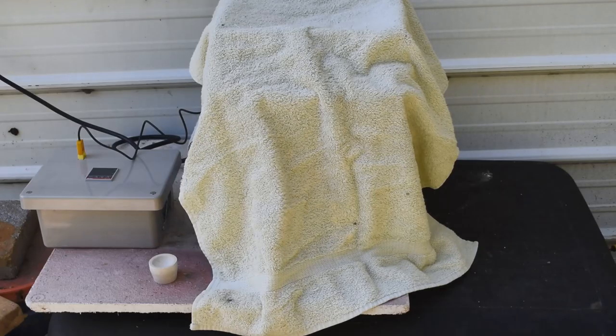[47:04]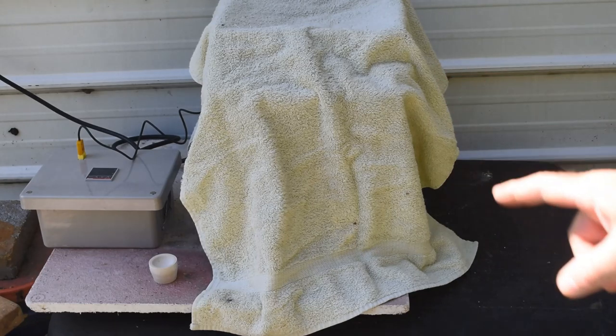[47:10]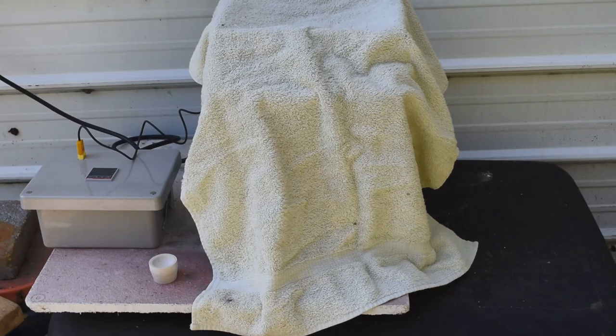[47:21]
All right, guys, I think it's time to actually try Cupelling something with this furnace. Okay, but first, we have some important business to take care of. Rick Brock, who is a great patron to this channel, earned the naming rights for this furnace by making a generous donation to this channel. It's time to unveil the name he came up with. Now, I've been pestering him for a few weeks to come up with a name for this thing.
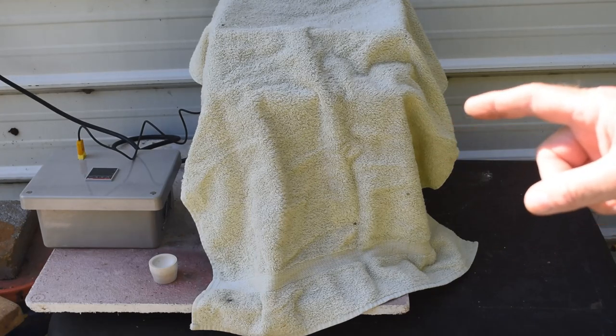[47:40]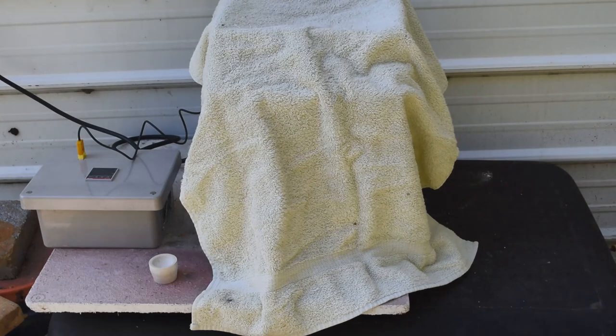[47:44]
And he finally got back to me and said, well, you know, I couldn't think up anything good. I polled my friends and family, and well, this is all I've got. It sounds corny. I thought, though, that the names that he came up with were fantastic, and I don't have a problem with corny. I like corny, okay? I got to introduce a little comedy into life, right? But I think he came up with a couple of fantastic names. He said, well, if you don't like them, use something else.
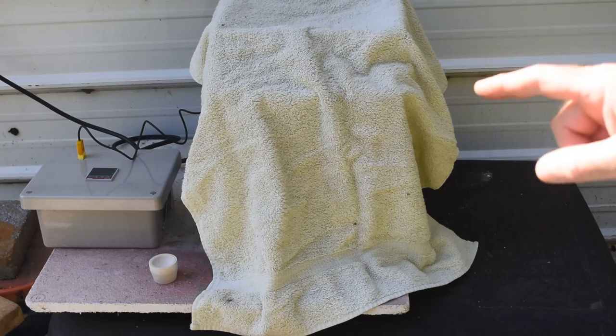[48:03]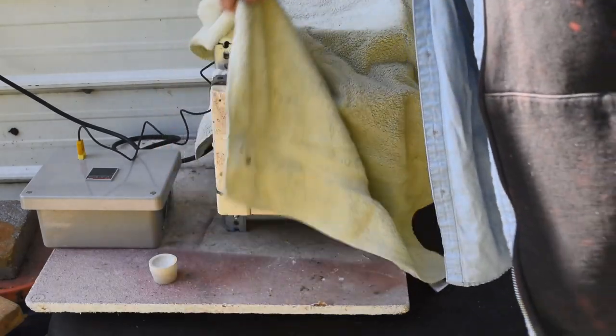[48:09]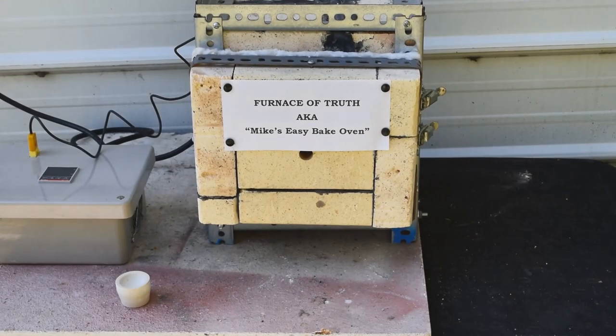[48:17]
Well, I can't even pick between his two best names, so it's going to have a main name and a nickname. So here we go. Here's the great unveiling of the names Rick came up with. That's right. Furnace of Truth. That's very appropriate, because that's what you're looking for when you're doing a fire assay. You're looking for the truth of how much precious metal there is in your samples, okay? And then, aka Mike's Easy Bake Oven. I love it. That got a good chuckle out of me.
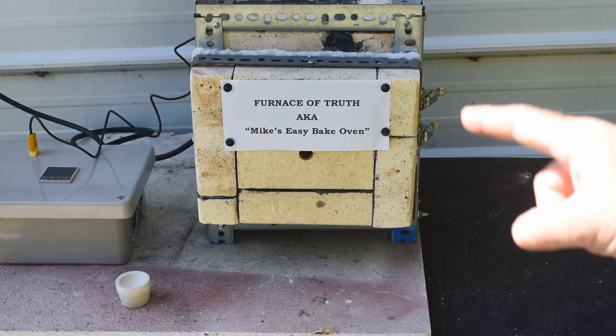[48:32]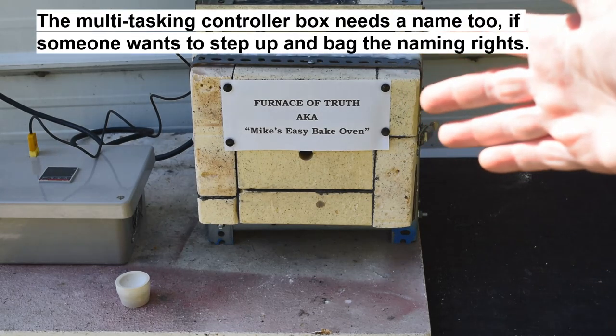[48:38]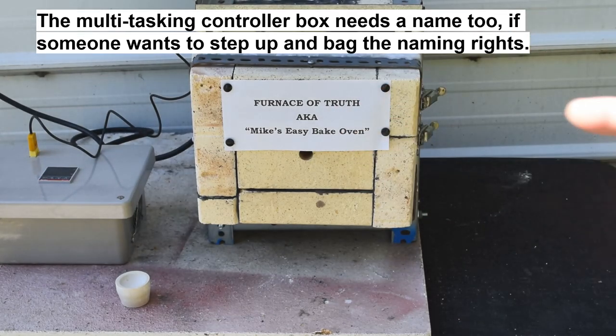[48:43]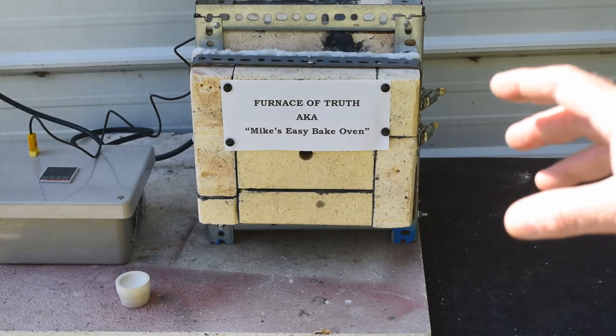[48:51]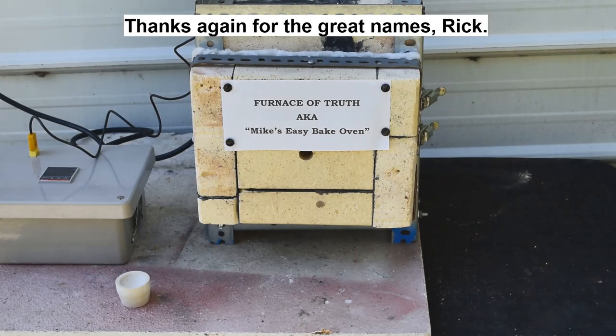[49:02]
I would bake cookies in it, probably, from time to time, if it weren't for the fact I'm going to be oxidizing a bunch of lead in it, which wouldn't be good for putting food in there. But it could be used for other things. It could be used as a bake-out furnace for mold making, where I can bake wax or plastic out of plaster molds before using them to cast metal or glass. So it could get used as a baking oven, just not for food. Okay, so I think it's time we fired this thing up and actually did some Cupelling.
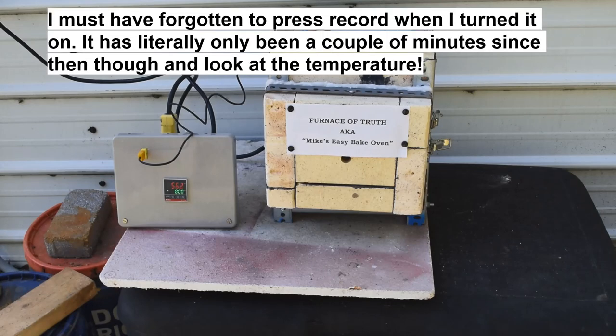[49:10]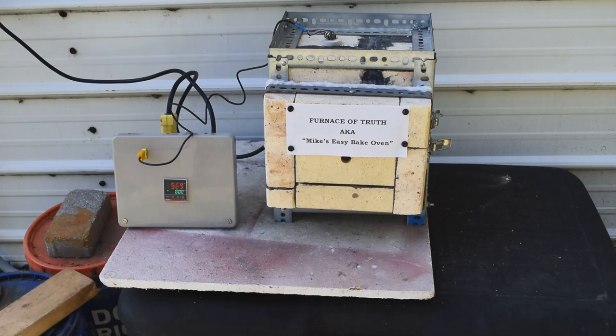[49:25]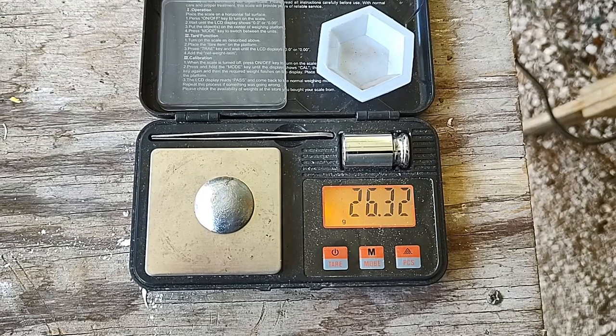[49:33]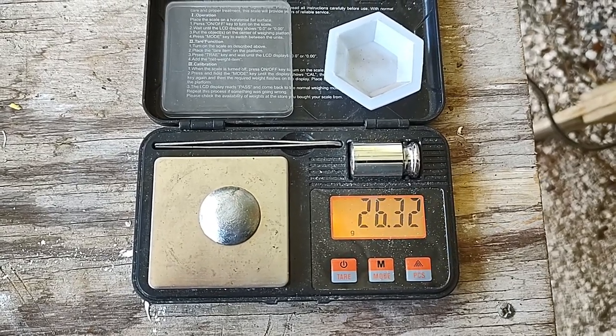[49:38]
So it's only been a few minutes, and look at that, 562 degrees, 563, 564. It's heating up fast. I like how fast this thing heats up. Cool. We're already well above the melting point of lead. So 800, I'm thinking, should be plenty hot enough for Cupelling. We'll be there soon. So I've got this 26.3 gram button of lead here, and I think we will Cupell it first thing.
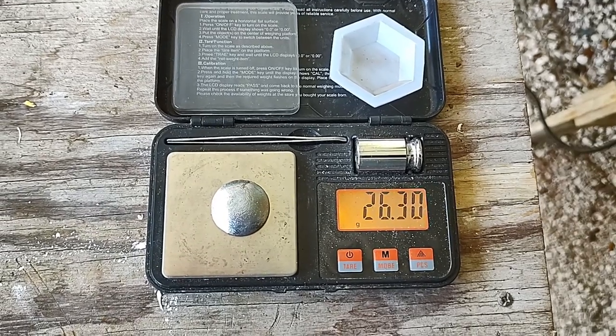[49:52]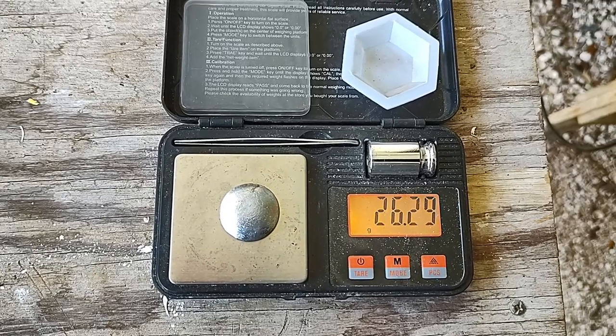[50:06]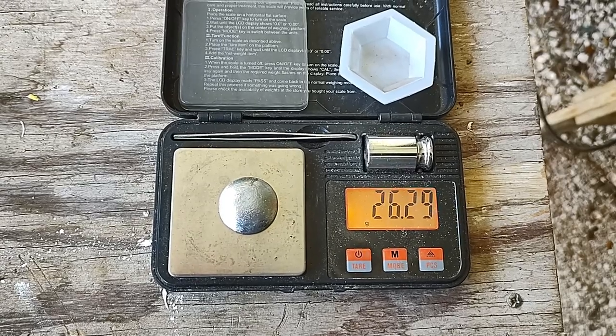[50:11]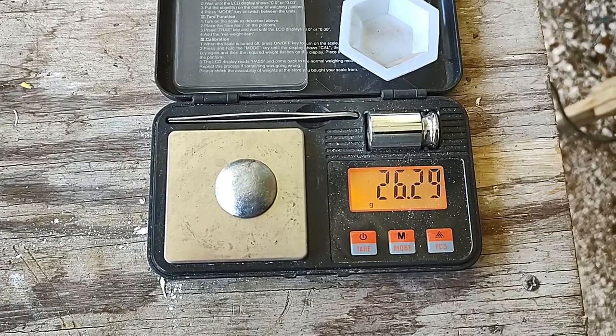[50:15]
Now I know from experience that the lead I'm using contains a little bit of silver. It's old roofing flashing lead that I've had probably, well, it was probably my father's. It's probably been around longer than I have. And it's not unusual for lead to be contaminated with silver. Most silver these days comes as a byproduct of lead and zinc mining. A lot of lead and zinc ores are heavily contaminated with silver, to the point where it's a major commodity. So there should be some silver in this once we Cupell it down.
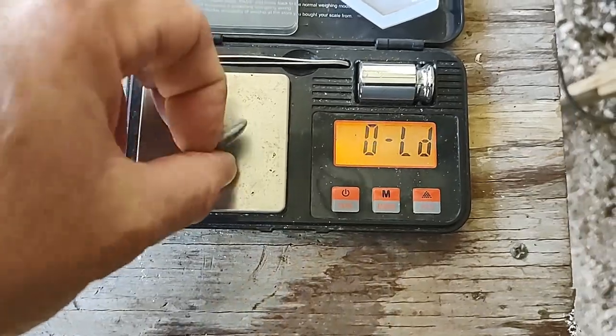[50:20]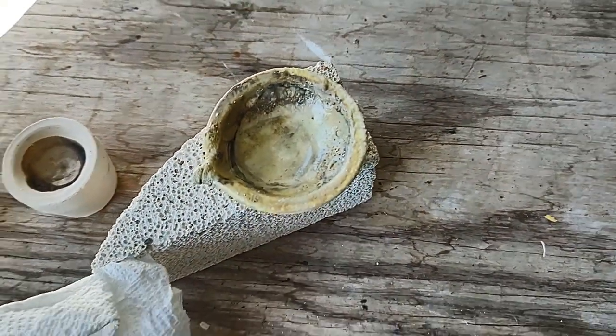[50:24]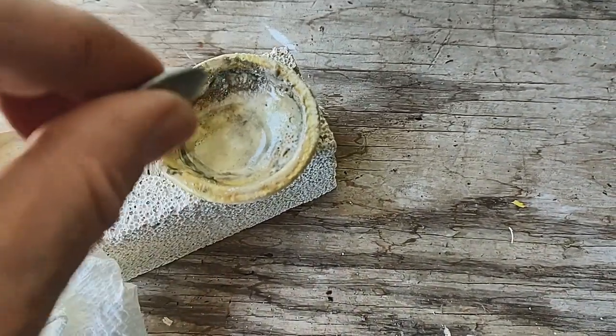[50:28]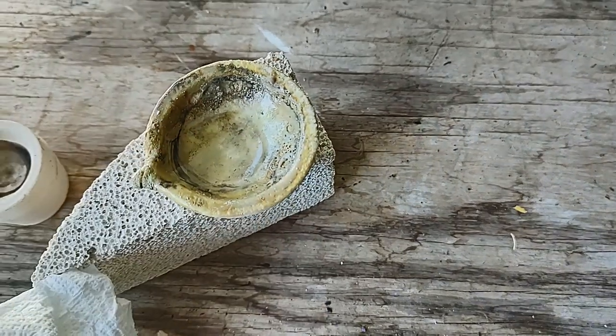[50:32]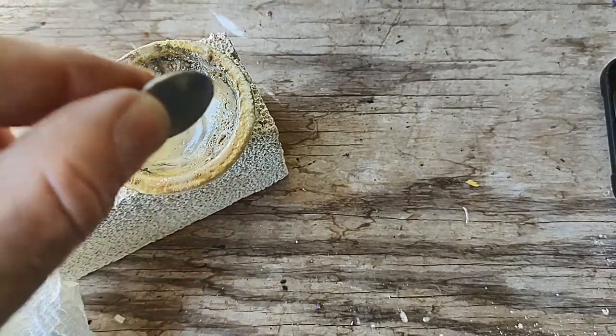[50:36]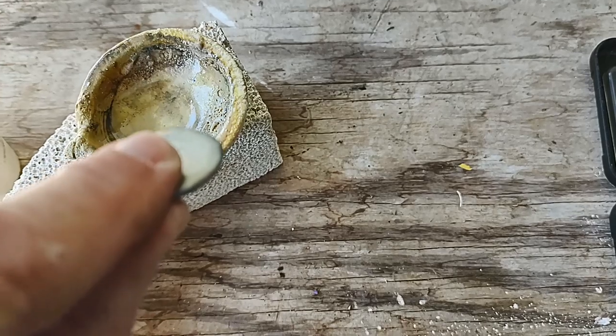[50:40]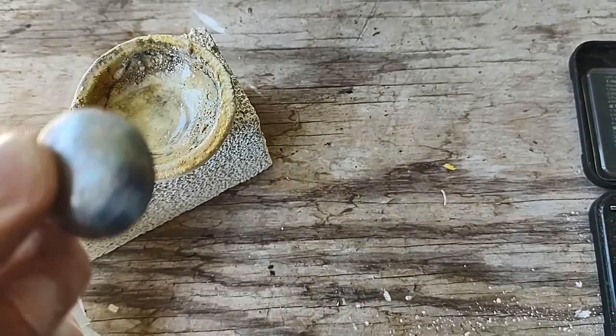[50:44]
But just to make sure, I actually melted this down in this little crucible right here. I have used this crucible in the past to melt silver, and there were some tiny little beads of silver stuck in the melted borax in the crucible. Well, now they're in here. So we definitely should get some silver out of this once we Cupell this down. So let's go over to the Cupelling furnace and see if it's ready to go.
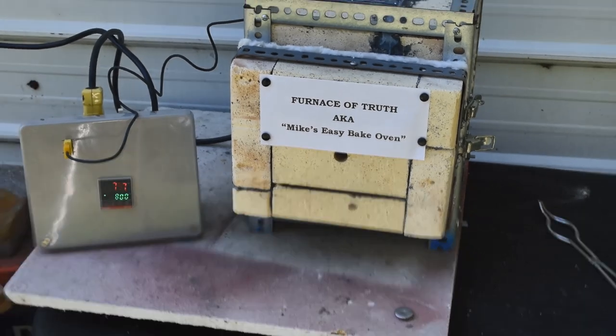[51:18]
Okay, this has been running for quite a while now. The temperature bounces up close to the set point and then falls back down a little bit. I think it's about as hot as it's going to get. Maybe if I set the set point higher, we might get it a little hotter, but I think this is probably going to be hot enough. All right? Because 796 is where we are now, and that is in Fahrenheit 1,464, almost 1,465 degrees. So I think we're hot enough to do some Cupelling.
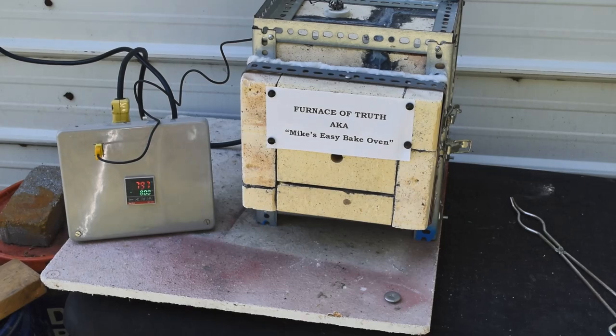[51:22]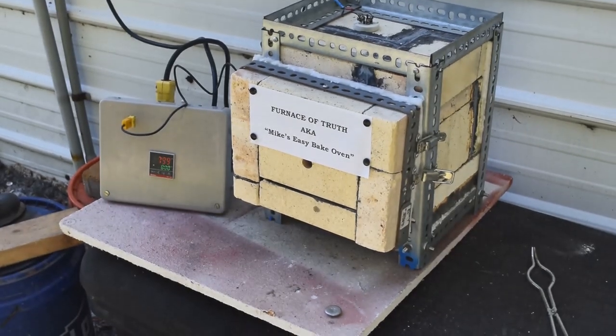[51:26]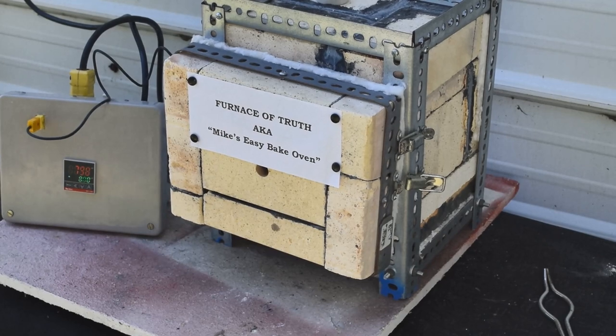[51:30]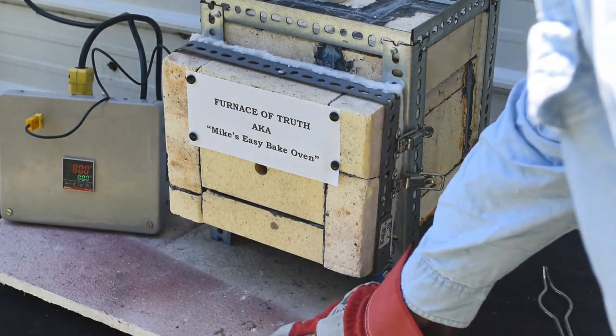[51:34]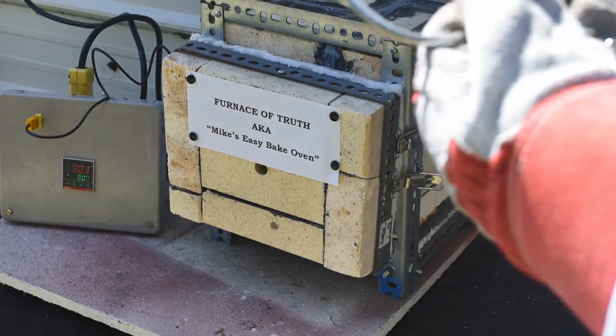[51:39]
I've got my lead button there ready to go. Got my cupel tongs. Let me reposition the camera so you can see inside, and we'll get this show on the road. Okay, I've zoomed in a little bit. Hopefully I can do this without blocking the view too badly. Let's get this lead in here. We'll see what this cupel in here looks like.
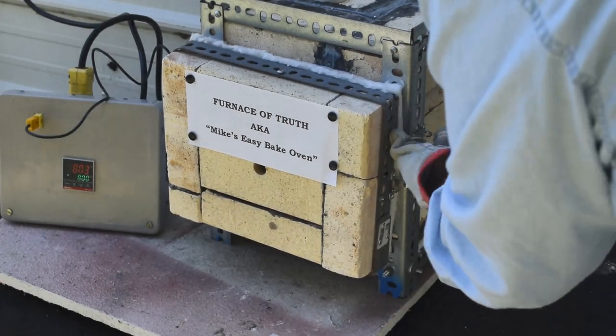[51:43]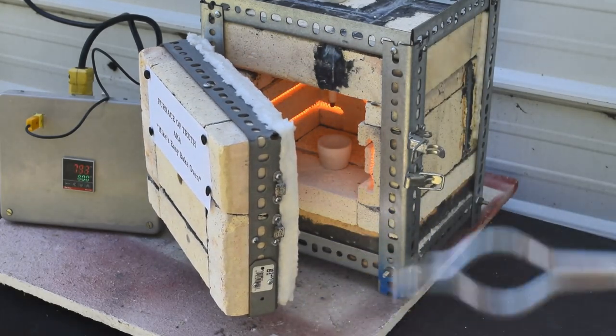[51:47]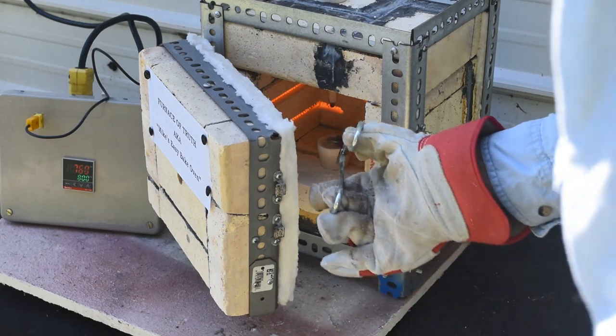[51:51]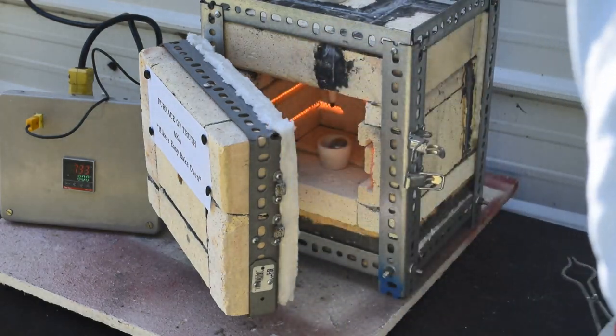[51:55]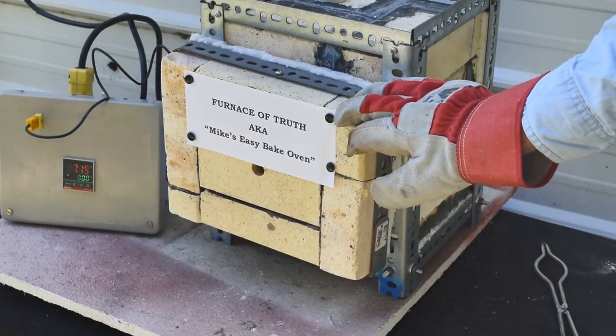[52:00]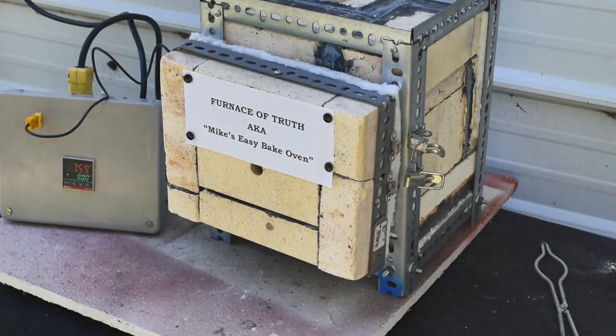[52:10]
Oh yeah, everything in there is good and hot. Let me get the lead in it. Close the door, and we'll check on it again in a minute and see if it's melted, and then after that it should start oxidizing and running off. Okay, it has literally been like 30 seconds. Let's have a look here.
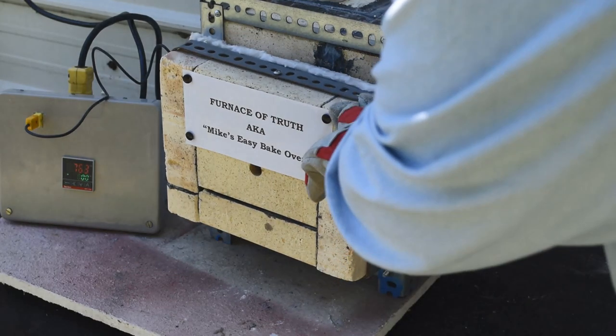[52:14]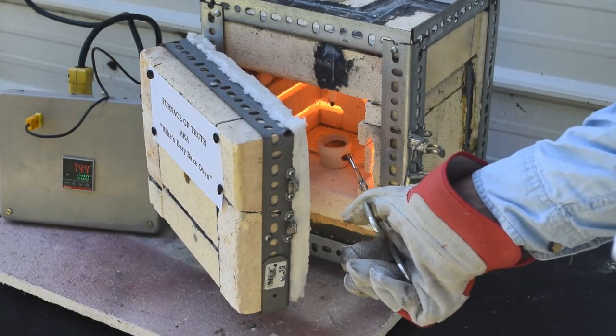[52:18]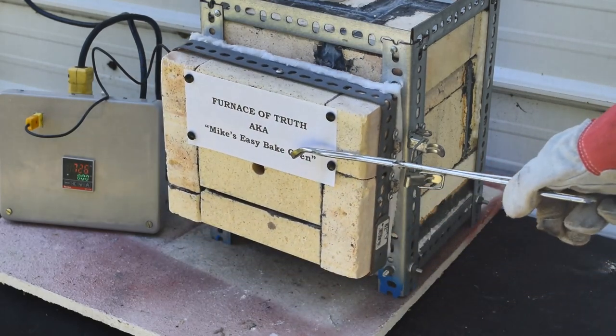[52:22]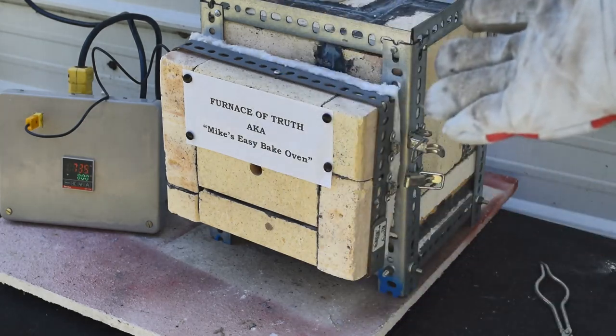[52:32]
Oh yeah, I hope that's showing up. There's a puddle of molten lead in that cupel now. Okay, so we'll just let it do its thing. I'll leave the door cracked a little bit. I'm sure the temperature will come down some, but it should still be high enough for this to work. But with the door cracked, we'll get some oxygen in there to oxidize the lead.
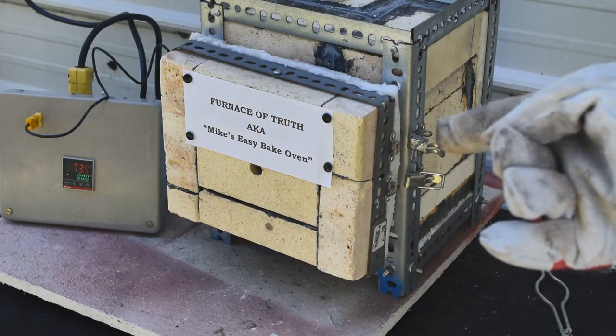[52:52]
The lead oxide, which will be above its melting point, will soak into the bone ash cupel and expose more lead to the air, and the process will continue. Every time fresh lead is exposed to the air, it'll oxidize. The liquid oxide will get soaked into the bone ash cupel. And eventually, all the lead will be gone as lead oxide soaked into the cupel, and any precious metals not easily oxidized, like gold or silver, will be left behind as a tiny little bead in the cupel. So we'll check on it again in a little while and see how it's going.
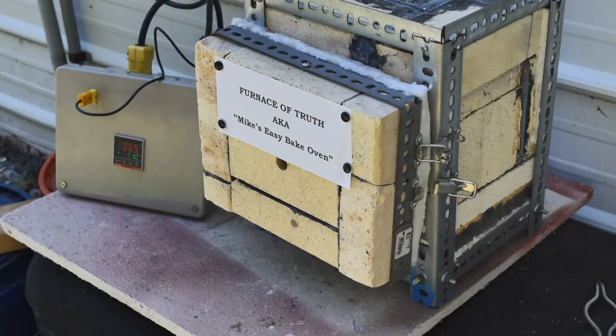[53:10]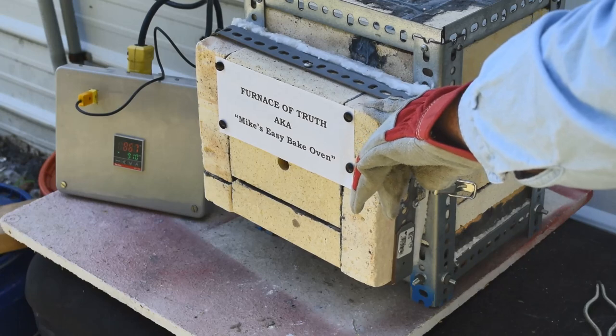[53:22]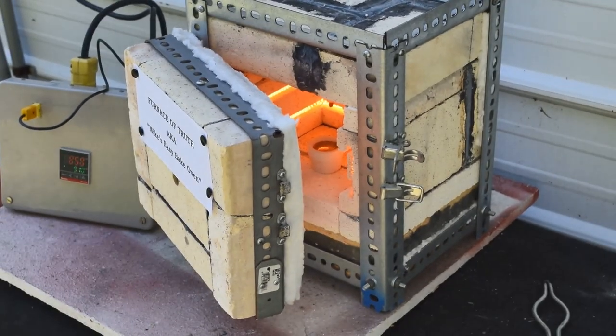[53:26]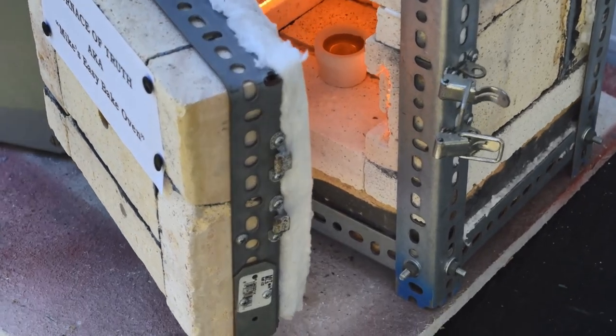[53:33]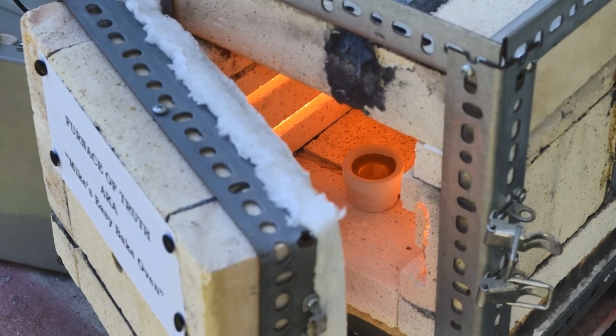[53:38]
Well, I bumped up the temperature a little bit because 800 is actually a little on the cool side for cupelling, but I'll tell you what, it was working. I took a peek inside there and I started seeing the black rind around the molten puddle of lead. The oxide is soaking into the cupel. Let's take a quick look. Can you see that? Look at that. I hope you can see that. Yep. The oxide is forming and rolling off of that lead button and soaking into the cupel.
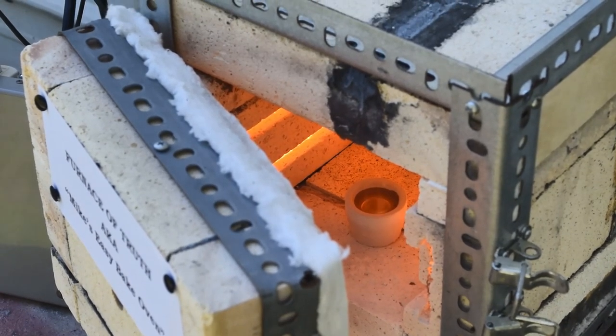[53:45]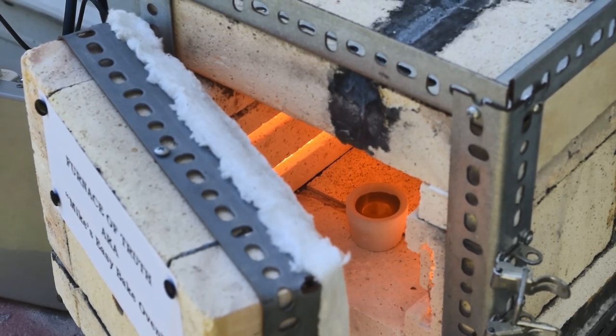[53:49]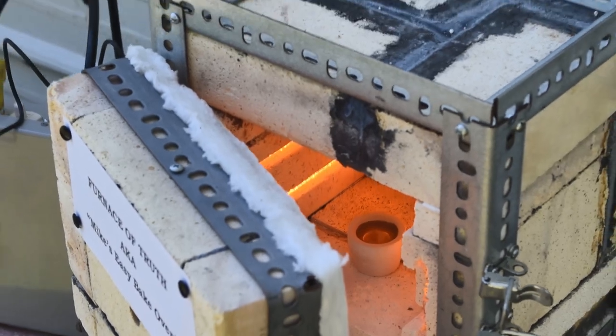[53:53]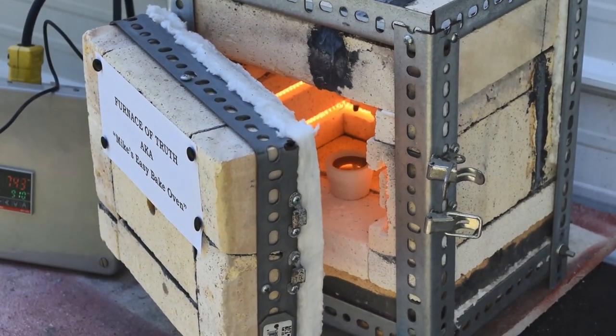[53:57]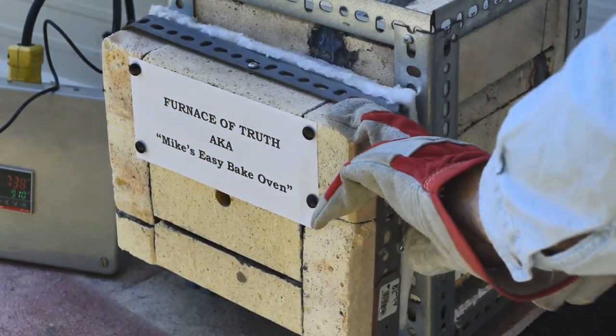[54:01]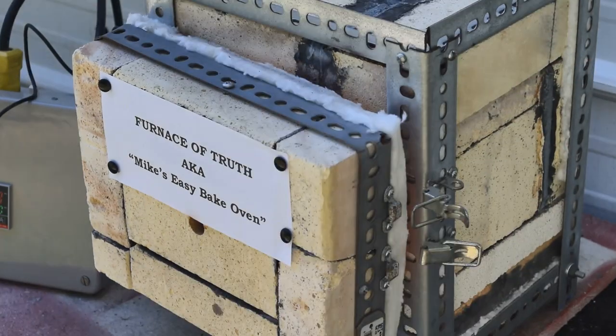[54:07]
Got some fumes coming off, which is why I'm doing this outside and I'm standing upwind of it. But yeah, it's working. Cool. You close the door again and let it keep working. I think at the rate it's going, this will be done probably before lunch. Nice. Let's have a quick peek.
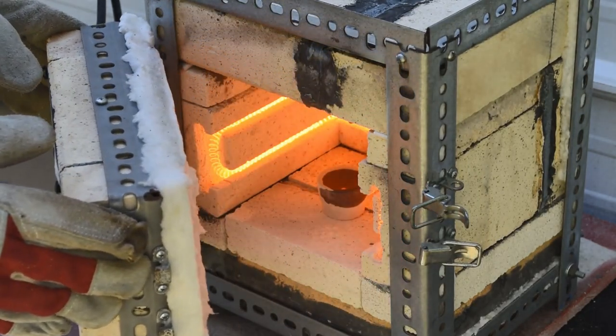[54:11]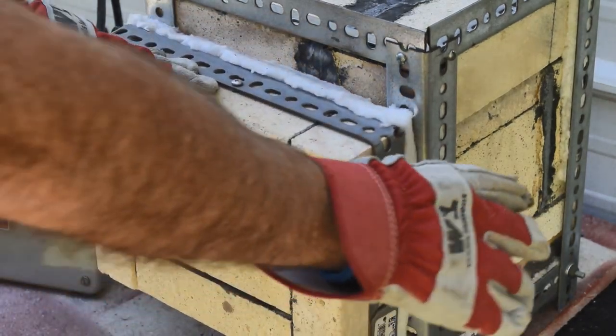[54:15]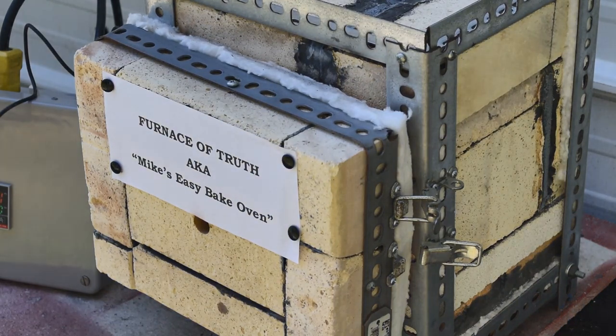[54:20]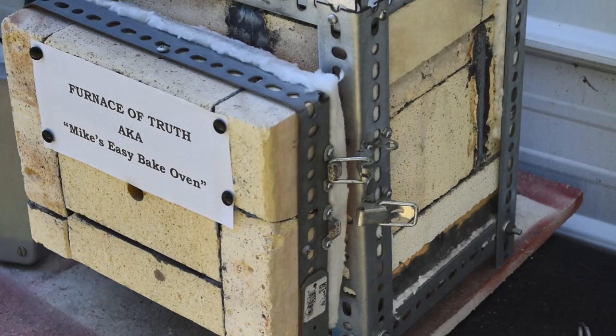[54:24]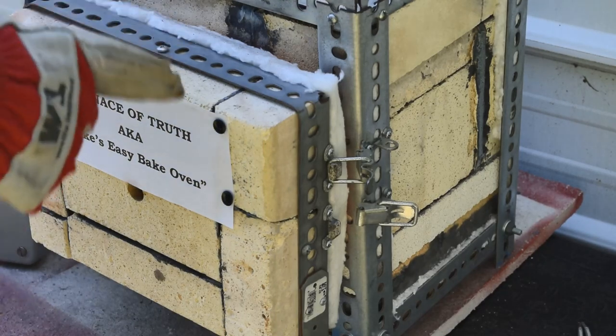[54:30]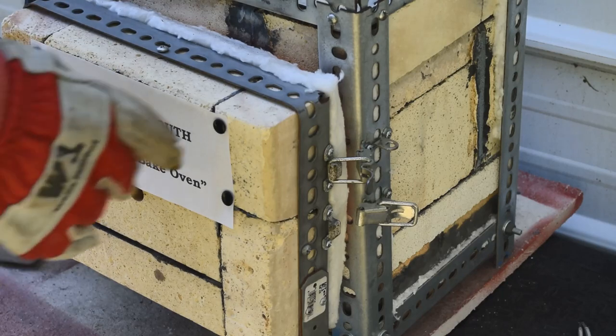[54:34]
Oh, there's not much left. I hope that little bitty bead's showing up. Yeah. All right. Good. It's just a couple minutes after noon too. I figured this would be done by noonish. So cool. All right, we appear to be done. It's been, I don't know, 15 minutes since the last segment I filmed. I've been watching the bead. It's pretty small, and it's not getting any smaller. So I would say we are done.
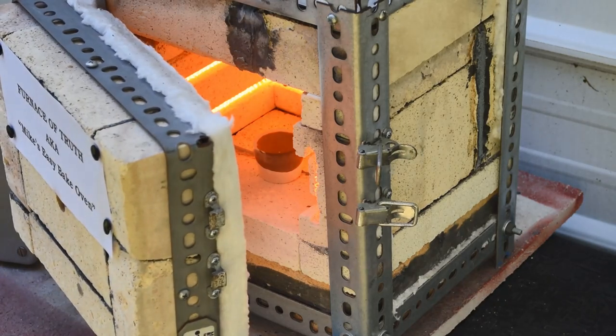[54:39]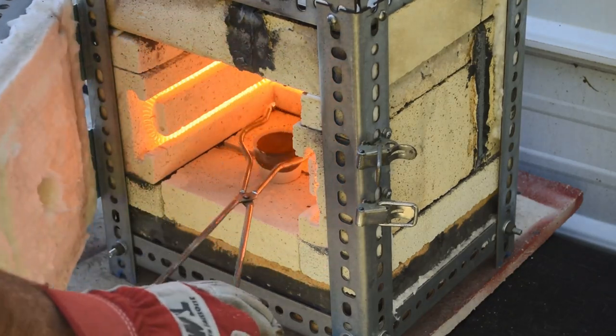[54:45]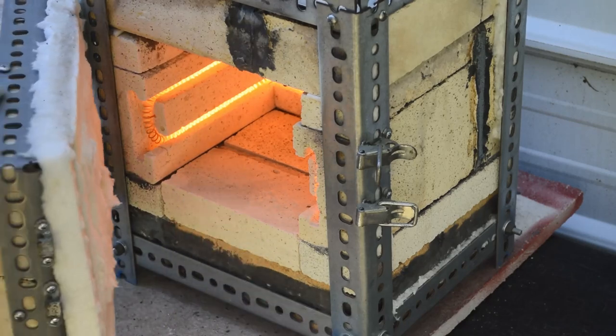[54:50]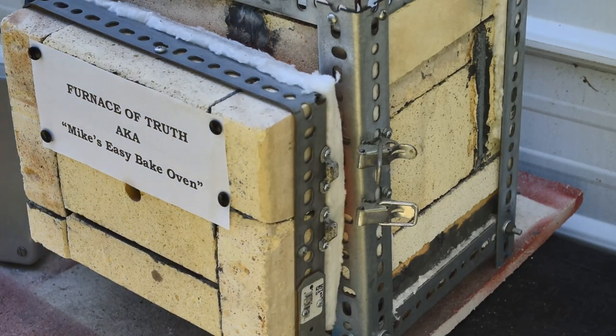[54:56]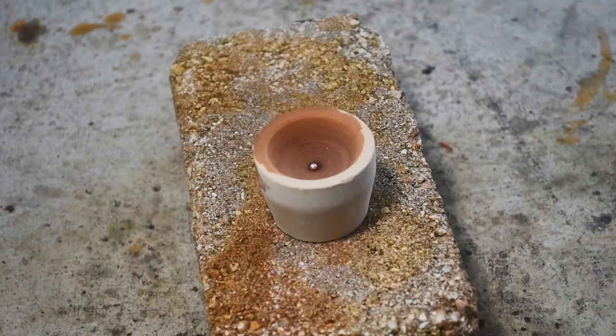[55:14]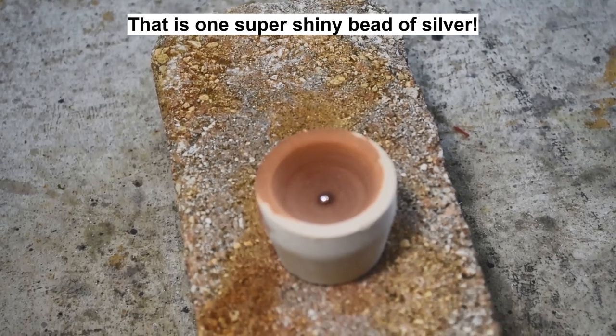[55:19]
Let me get it out of there. There it is. I'll give you a close-up look at it. We get the furnace shut down and we'll go take a look at it under the bench lights. Okay, here we are up on the workbench. I haven't turned the lights on so you can see that the cupel's still glowing. I think we missed the blick though, but we turn the lights on. Yeah, it's pretty wicked hot, but there's our little bead of silver that we got from cupelling that
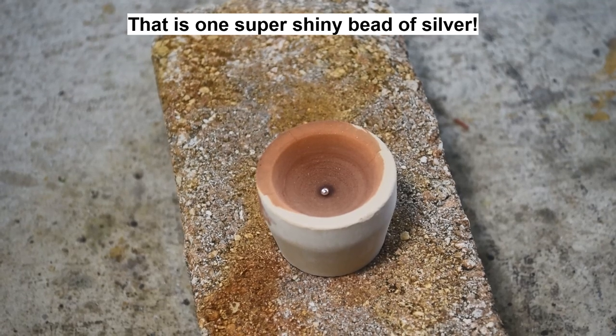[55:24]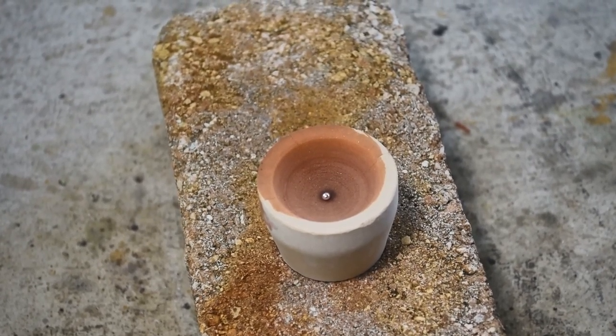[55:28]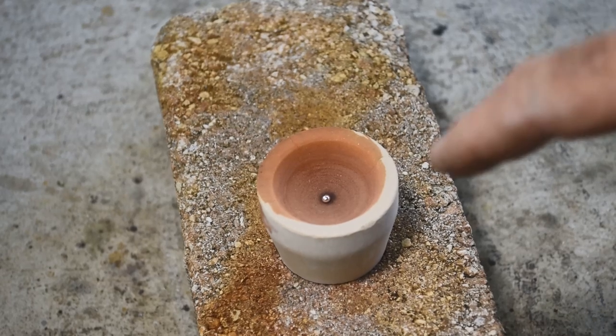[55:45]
26 grams of lead. And it went pretty easy and trouble-free. Probably would have gone a little quicker if I had used less lead, because I think these are only 30 gram capacity cupels. So we're right at about at the max of what these cupels could handle. But hey, it worked. It didn't take that long. No problems. And like I said, some of this silver was going to be present in the lead initially anyway
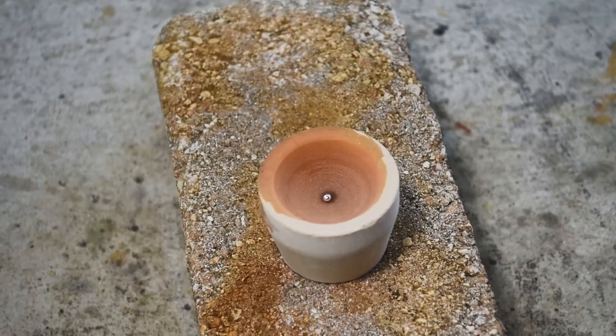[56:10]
as a contaminant. But I used that lead to wash my silver melting crucible and got some of the little stray beads of silver corralled in the lead. And now got some fairly pure silver here. I can add that to my silver jar. Okay, this went pretty nicely.
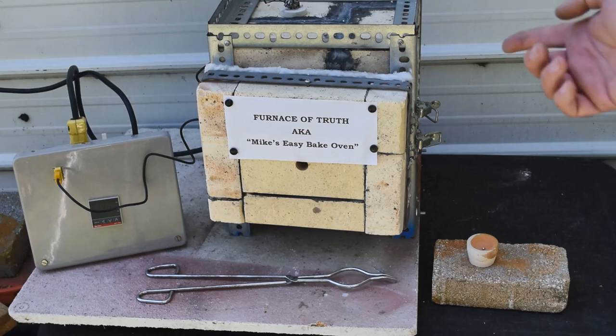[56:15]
Well, I think the first cupellation in the Furnace of Truth, aka Mike's Easy Bake Oven, went pretty darn well. I am so stoked that this thing is working, and I think you're going to see this in a lot of future videos. In about a month, I'm headed out west again, and I'll be coming back with a lot of ore from some old gold mines, and we'll probably be smelting some of that and doing cupellations in this oven once I get back from that trip. So I think you're going to see a lot of this in the future. I gotta find a way to permanently get the name of the oven on there. But I just couldn't be more pleased with how this worked. It was just about perfect, trouble-free.
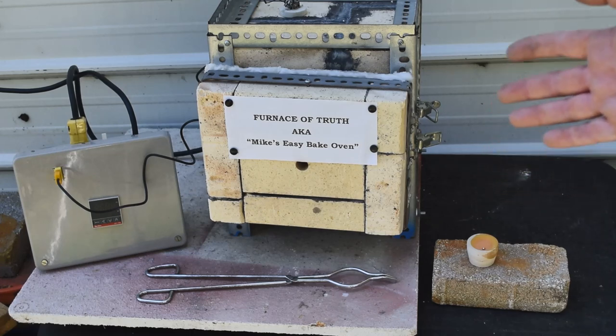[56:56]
And if you folks out there need your own cupelling furnace, just, you know, hey, roll your own. It's not that hard, and it's a whole lot cheaper than buying one. If I can do it, anybody can, right?